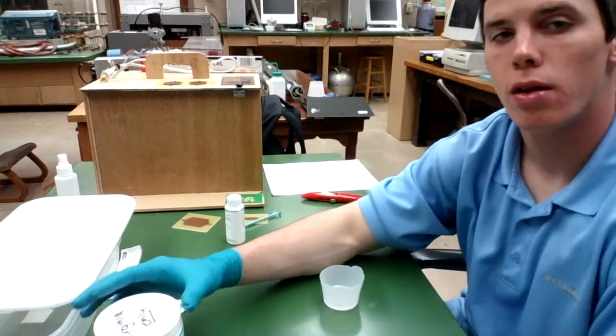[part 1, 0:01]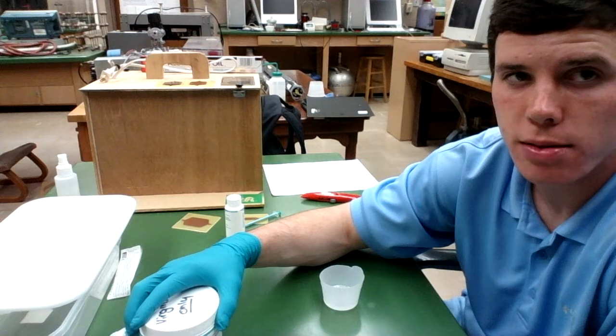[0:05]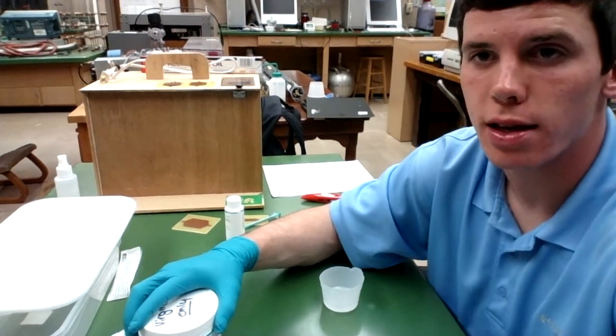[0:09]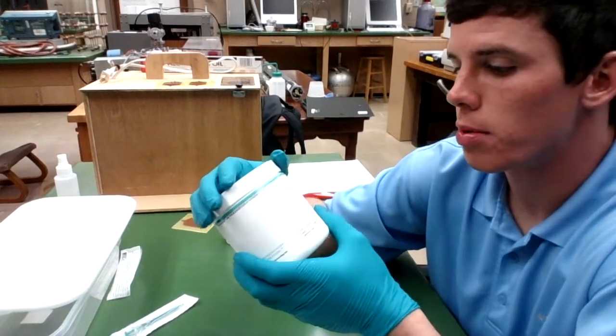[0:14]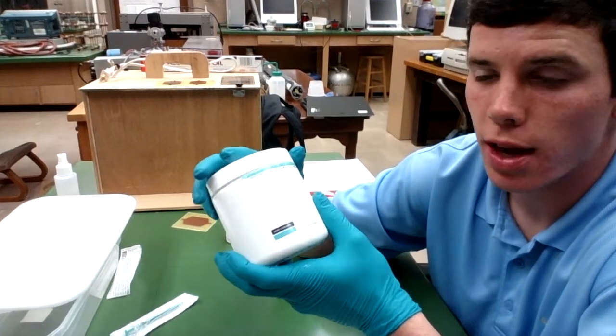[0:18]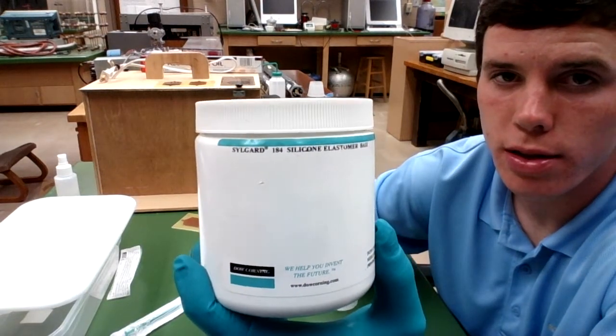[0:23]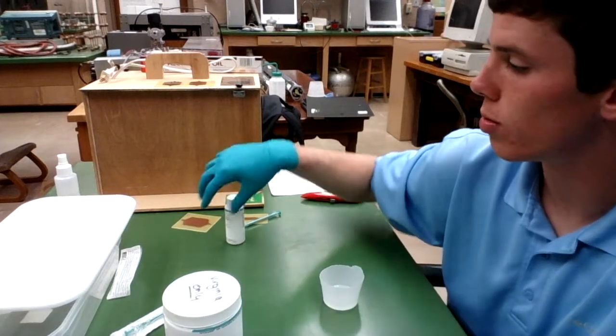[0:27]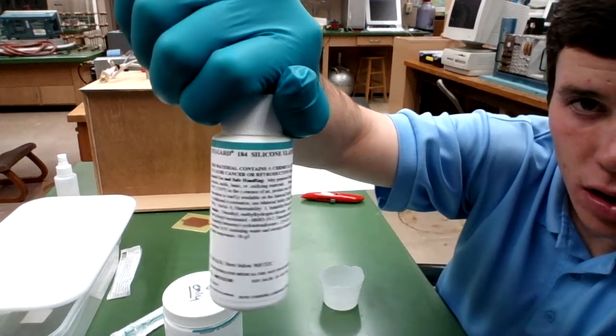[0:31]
So our next step is to make our PDMS mixture that will cure on our device and essentially make up our device. This mixture will be made at a 10-to-1 ratio of 10 parts of this Sylgard 184 silicone elastomer base from Dow Corning to one part of the Sylgard 184 curing agent.
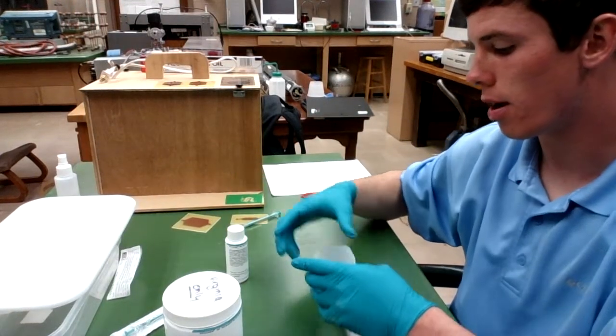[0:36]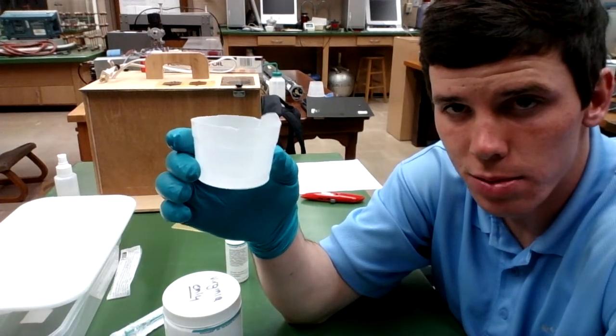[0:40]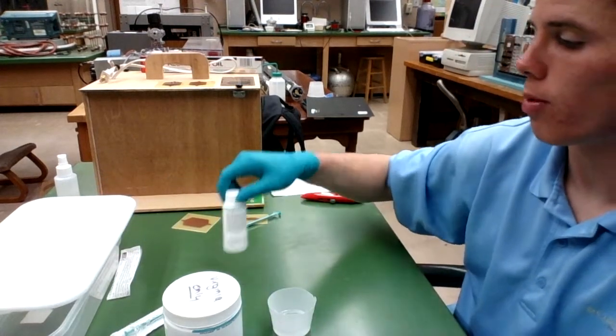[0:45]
I've already poured about 15 milliliters of the elastomer base into this cup here. I'm going to put in 1.5 milliliters of this curing agent.
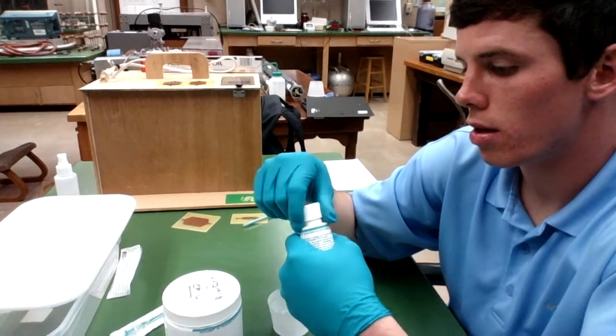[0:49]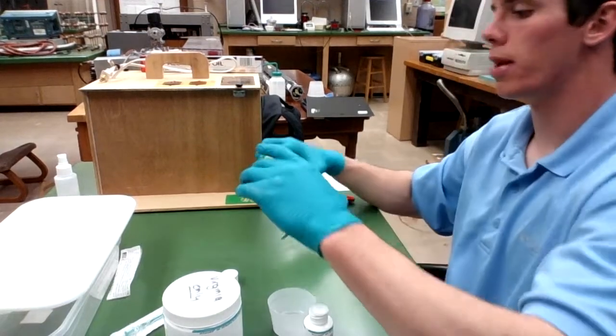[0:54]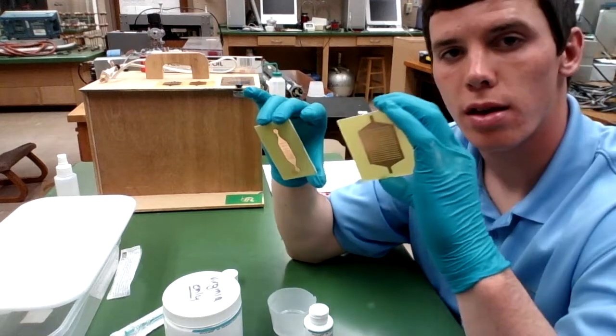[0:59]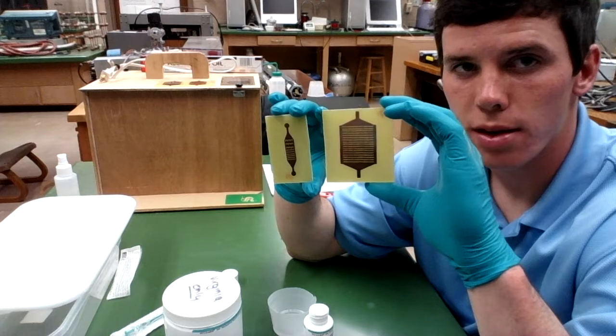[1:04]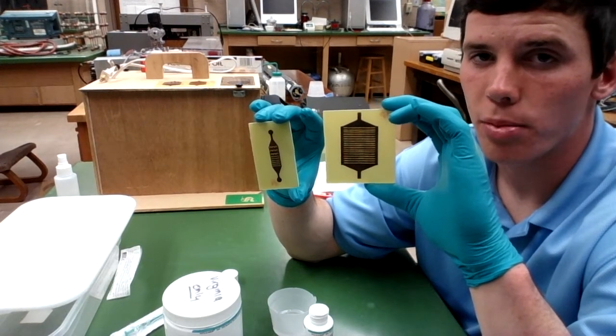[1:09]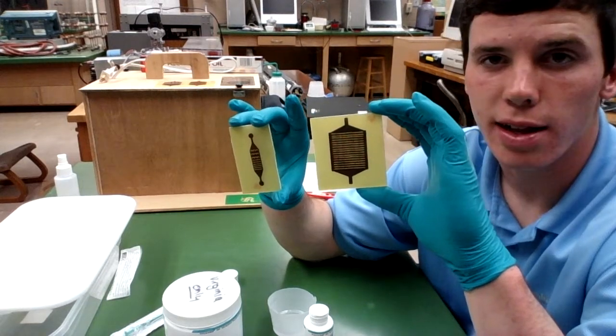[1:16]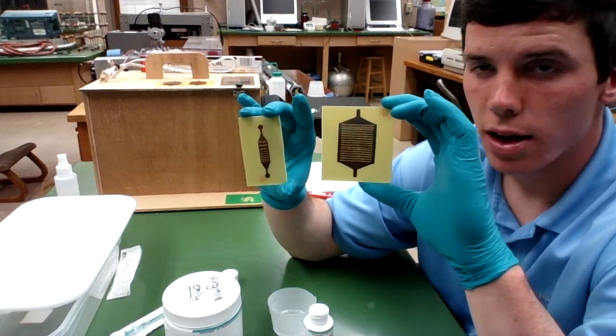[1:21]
Also, I have cut my printed circuit board into two pieces using my box cutter so that these pieces will more reflect the size of the device that I want, instead of having to pour all of this PDMS onto a large circuit board, a large PCB, and then wasting a lot of it. So I've trimmed down the designs a little bit in order to conserve my PDMS essentially.
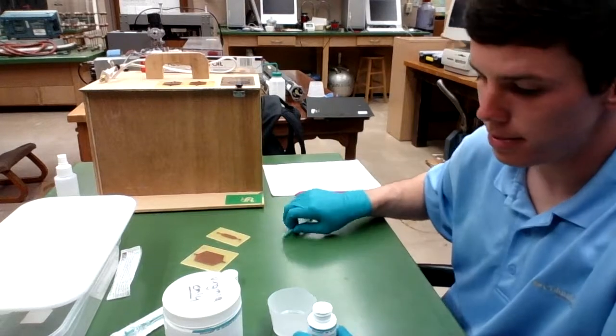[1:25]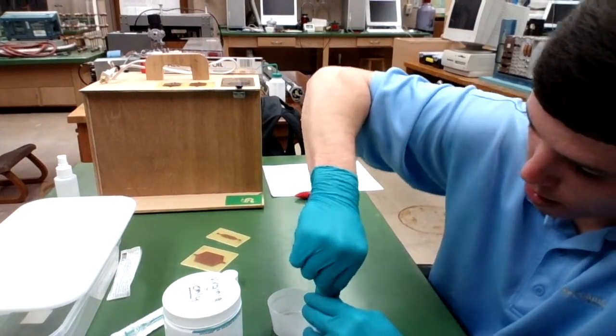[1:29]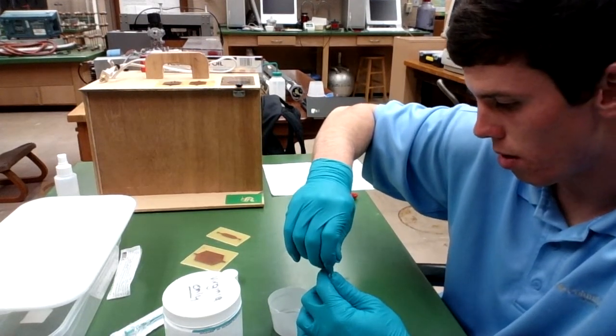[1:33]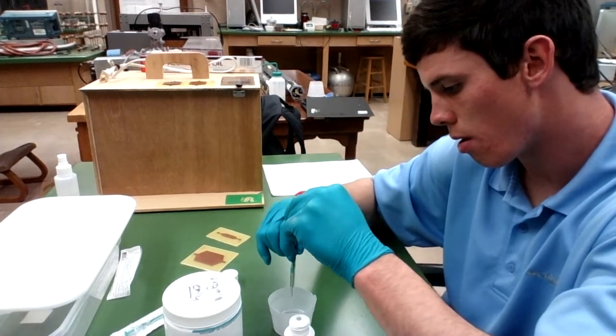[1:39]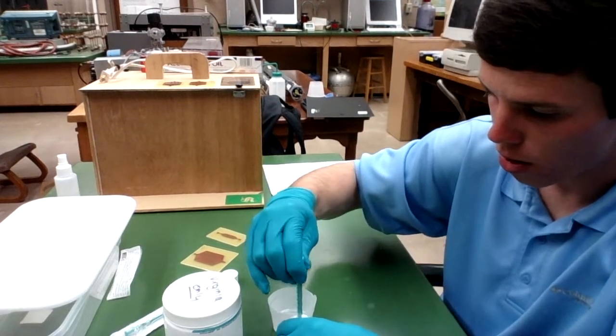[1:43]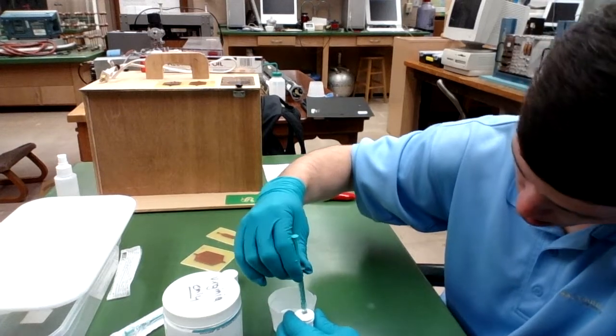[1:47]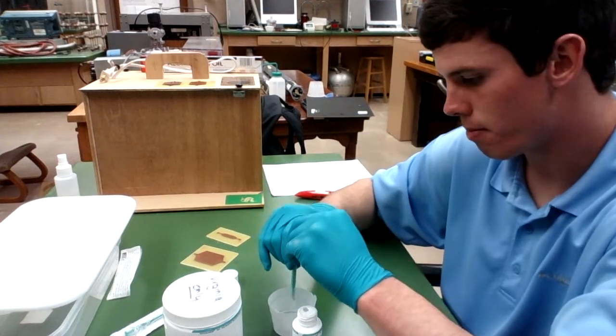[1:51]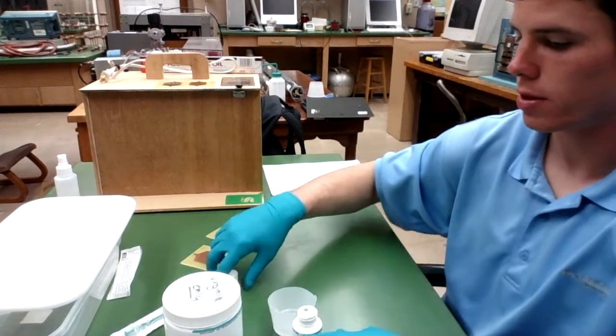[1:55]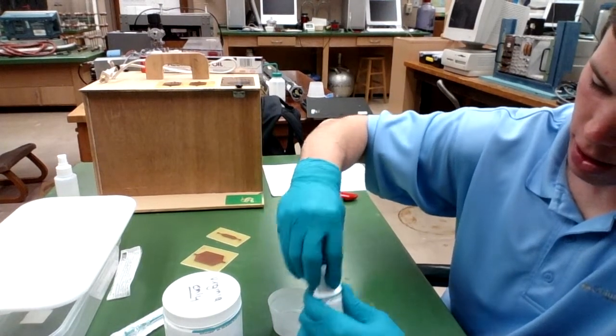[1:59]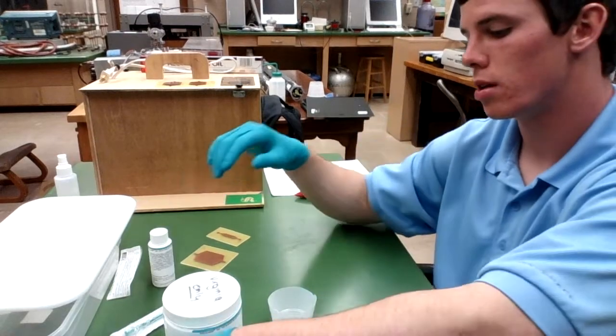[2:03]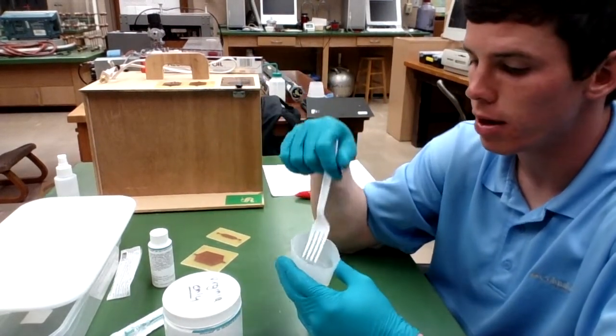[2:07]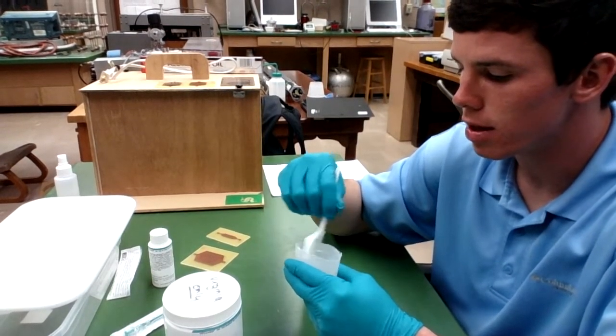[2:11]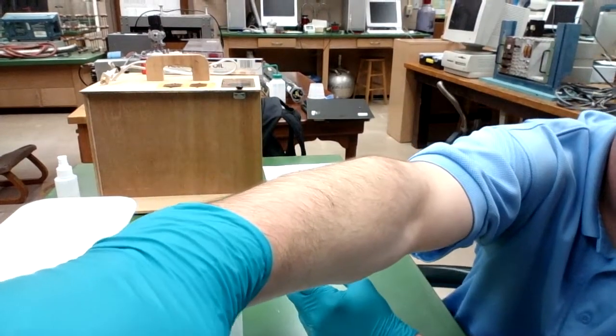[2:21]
Alright, so now that I've mixed the PDMS at a 10-to-1 ratio, my job now is to stir the mixture for about 5 minutes just using this plastic fork here. You want to stir it up so that you get lots of bubbles, ensuring that the curing agent has been mixed very thoroughly throughout the elastomer base.
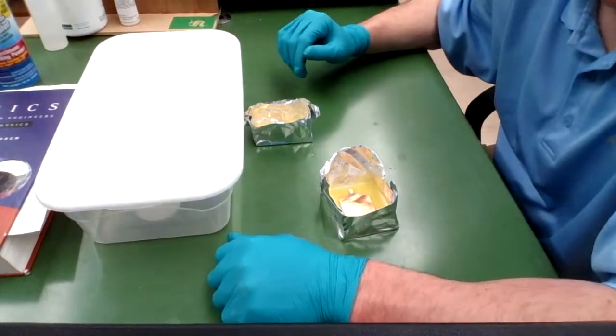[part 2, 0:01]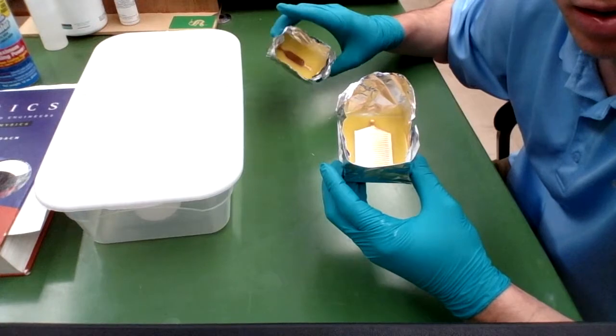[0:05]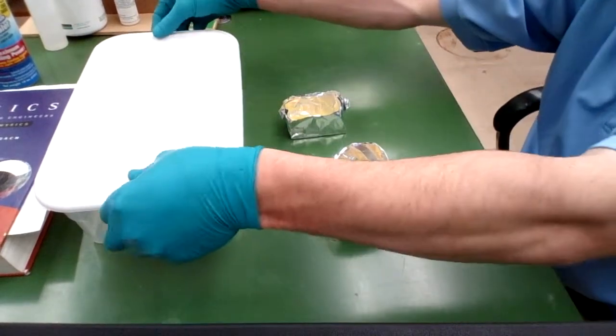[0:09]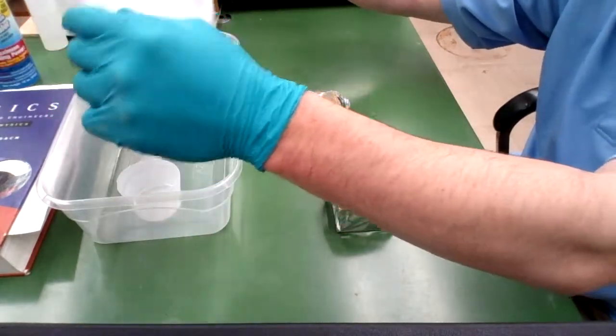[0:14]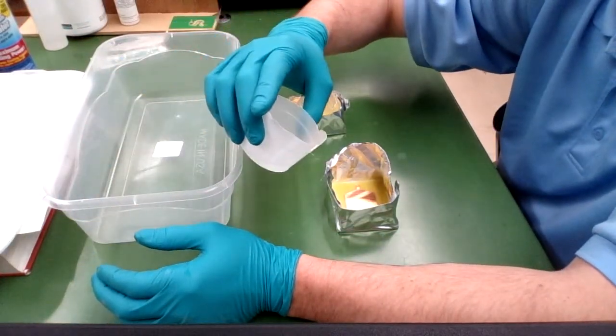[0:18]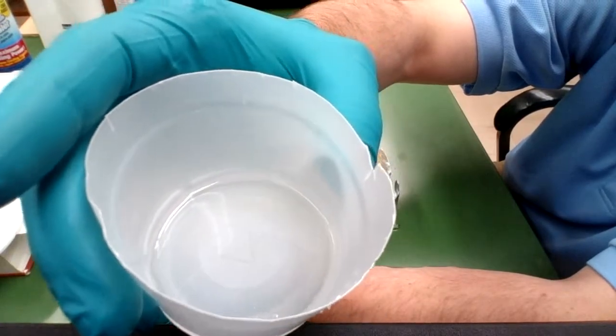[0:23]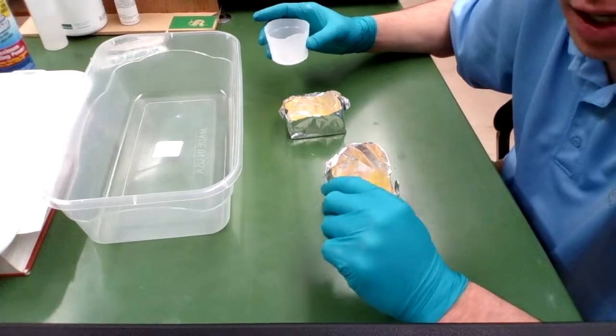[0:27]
Alright, so I've created two little vessels for both of my printed circuit board designs, and it's been 15 minutes for my PDMS to degas, so let's check it out. You can see PDMS has been completely degassed, and there are no air bubbles in there. I'd like to credit this ingenious little step in this process to Ron Reiser of the Science Geyser.
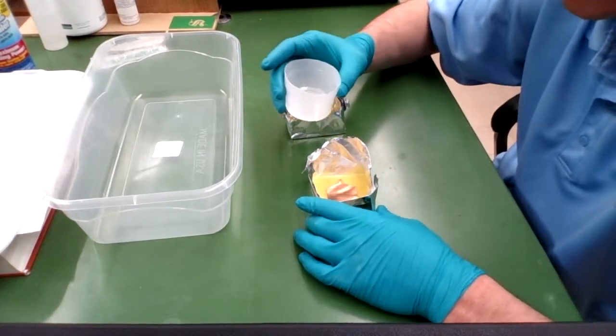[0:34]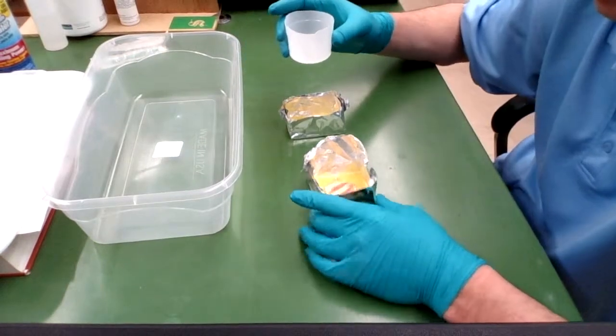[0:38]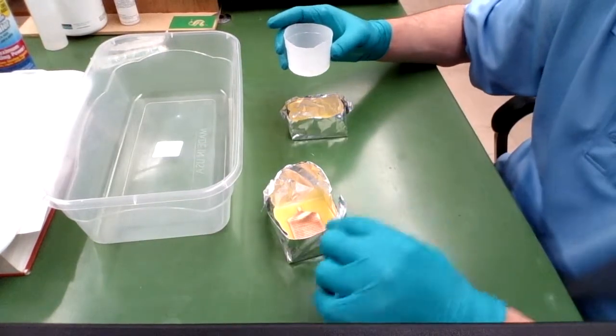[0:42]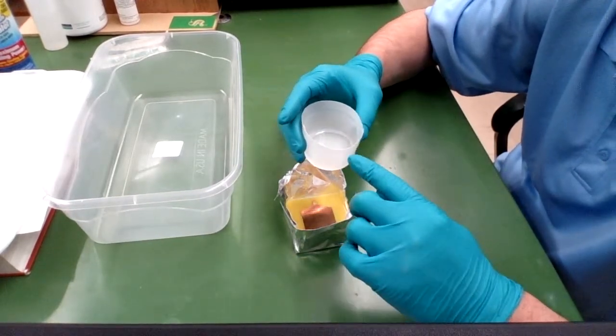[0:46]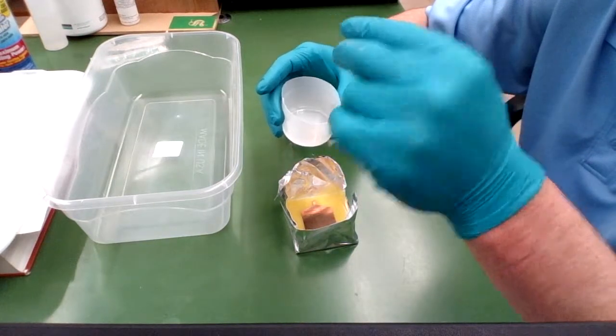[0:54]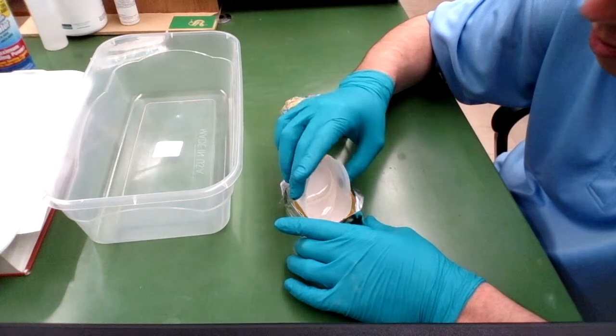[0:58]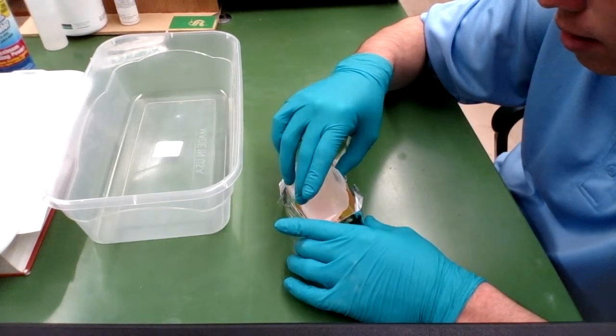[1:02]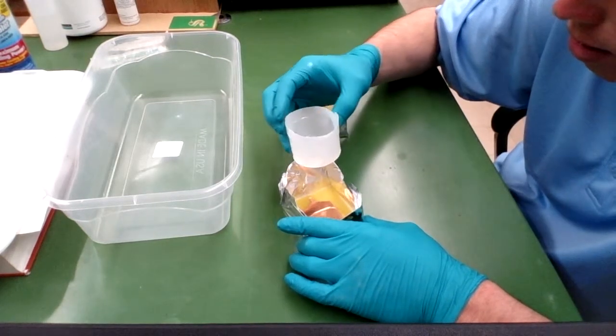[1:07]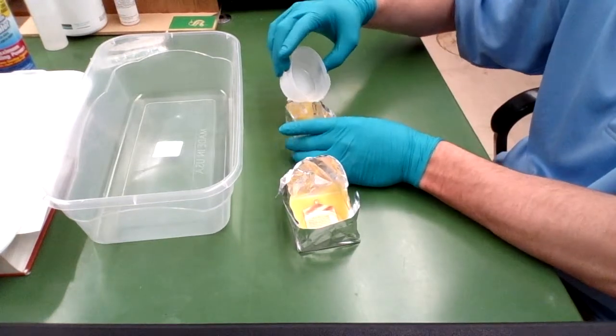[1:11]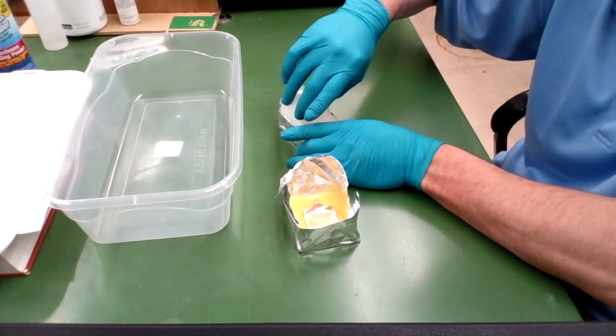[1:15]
Alright, so next, I'm going to pour my PDMS onto my designs. Since this design is slightly larger than this guy here, I'm going to pour a little bit more onto the larger design. And when I'm pouring, I want the tip of the cup to be as close to the PCB as possible in order to prevent air bubbles forming as the PDMS drips onto the PCB. So the rim of my cup is actually touching my PCB at the moment.
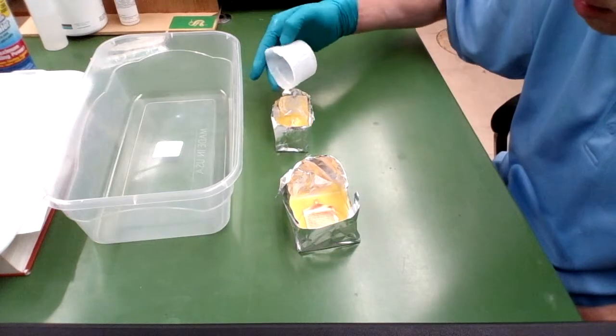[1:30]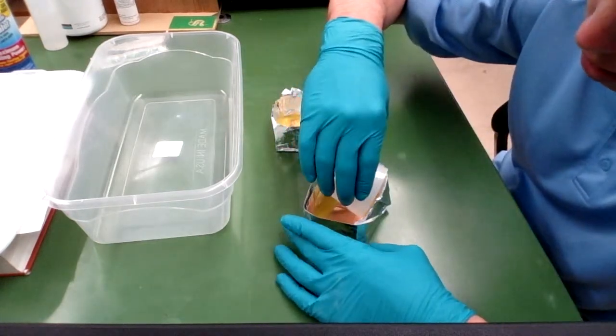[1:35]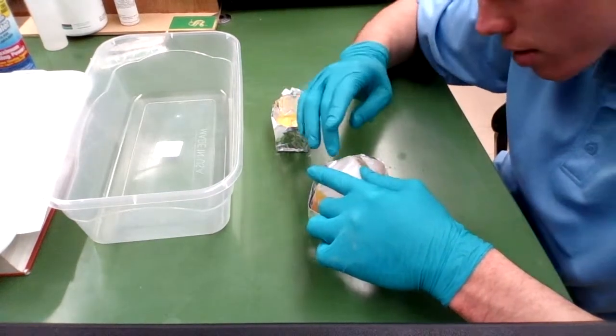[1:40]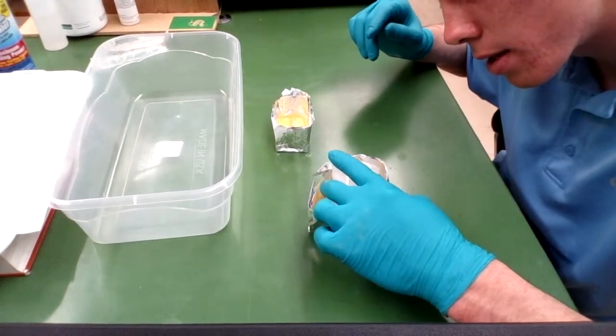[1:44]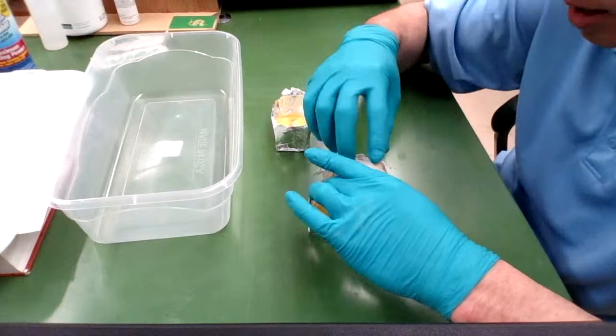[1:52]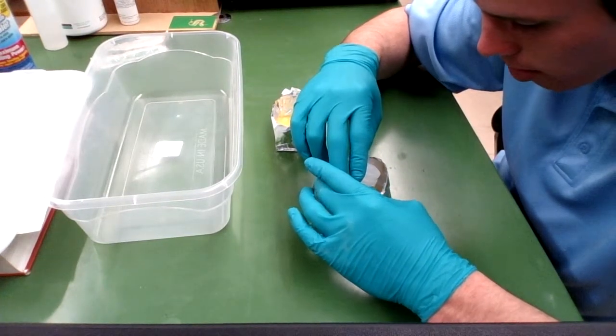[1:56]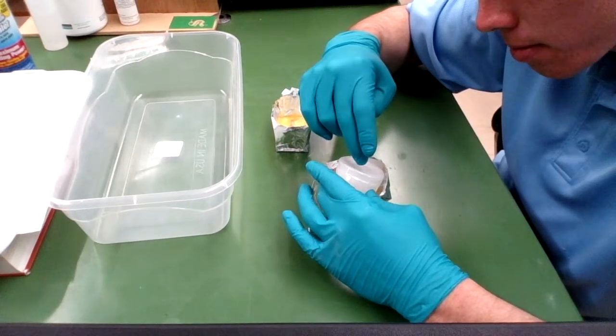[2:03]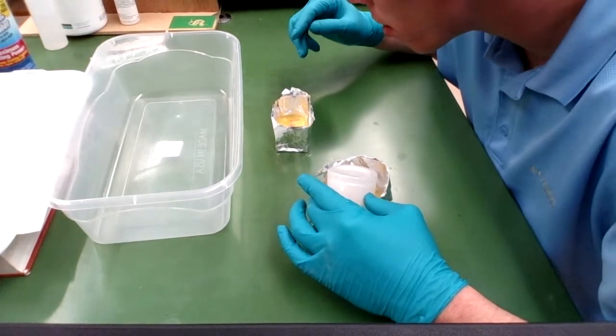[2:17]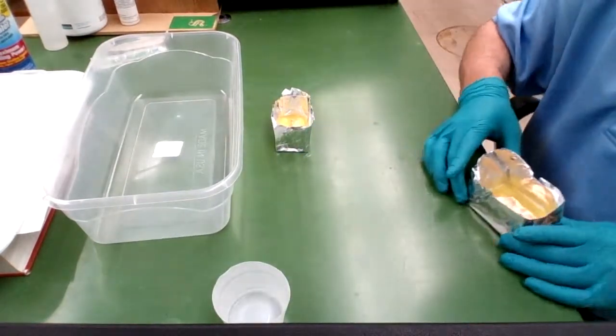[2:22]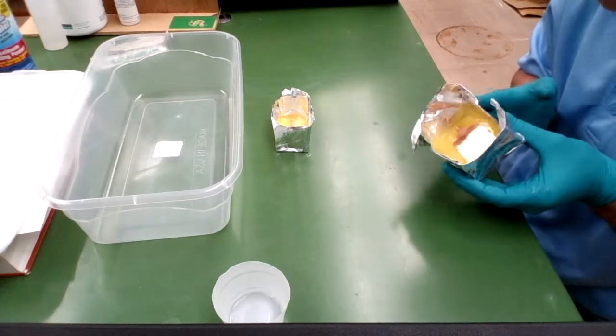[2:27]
And you don't need to pour so much that it completely covers the design, because as it sits in the oven, the PDMS will spread out all over the design. You want to use every last drip of your PDMS, though, because this stuff is kind of expensive. Definitely make sure you cover your entire design, but don't worry about covering your entire printed circuit board. We can spread it around a little bit by tilting it.
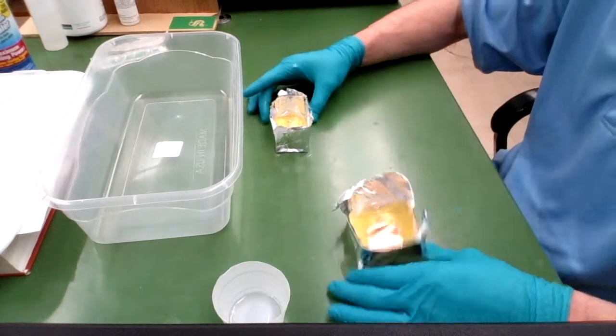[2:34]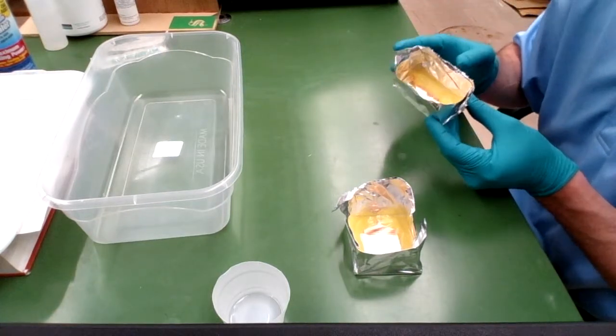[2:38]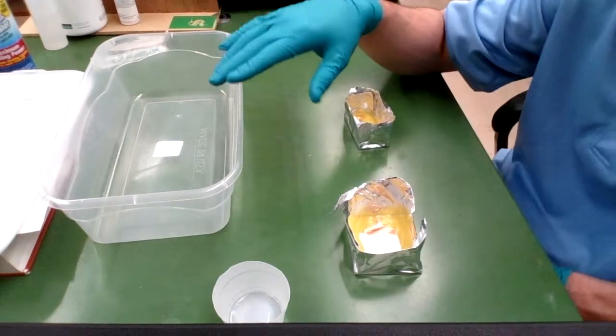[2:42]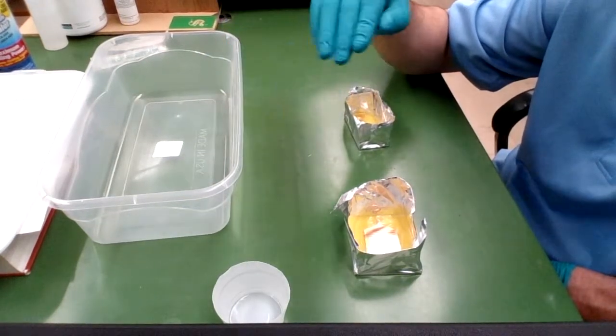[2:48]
Another important thing is to make sure that the surface of your PCB is completely devoid of any impurities or any crud that could be on the surface. And if there is, just wipe that off. Make sure it's not there.
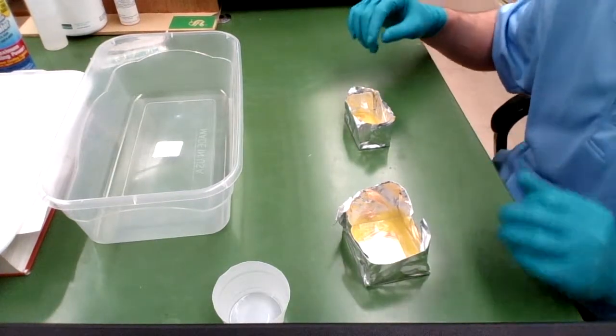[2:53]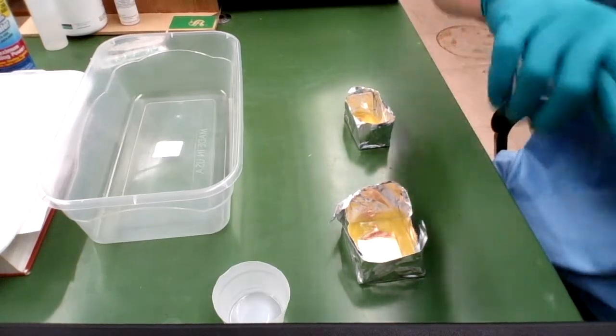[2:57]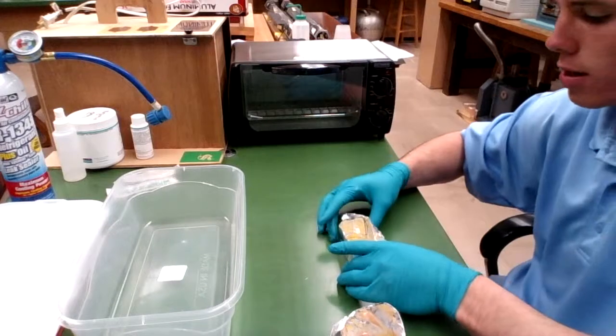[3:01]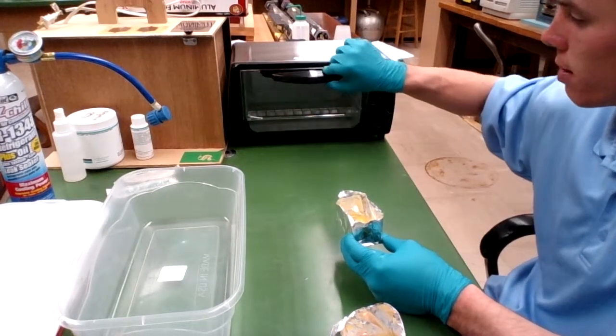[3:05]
So I've poured my PDMS onto my two designs. I have my oven here preheated to 120 degrees Celsius approximately, or 250 degrees Fahrenheit. And so I'm going to throw in my PCB for 10 minutes.
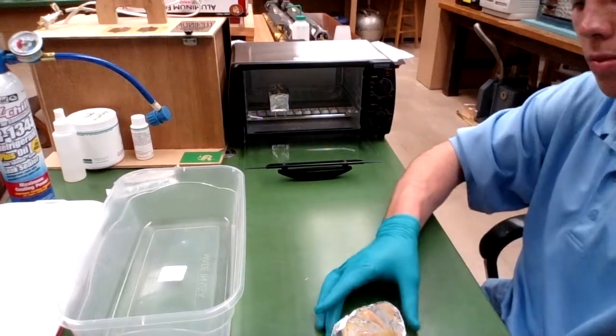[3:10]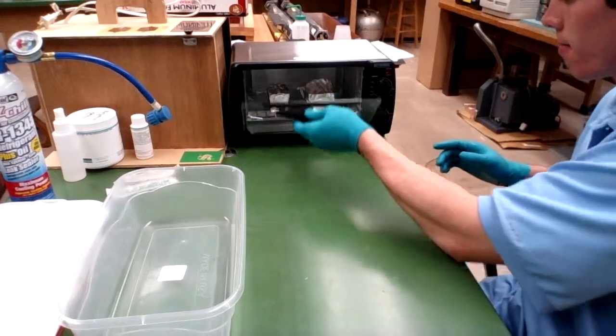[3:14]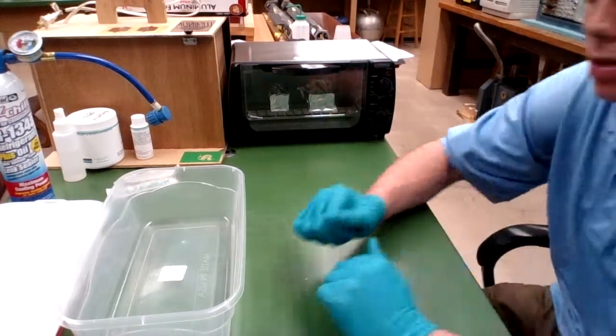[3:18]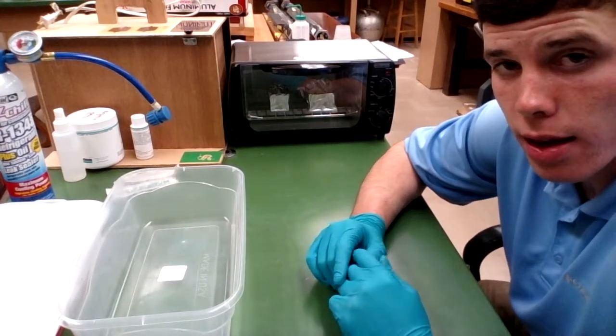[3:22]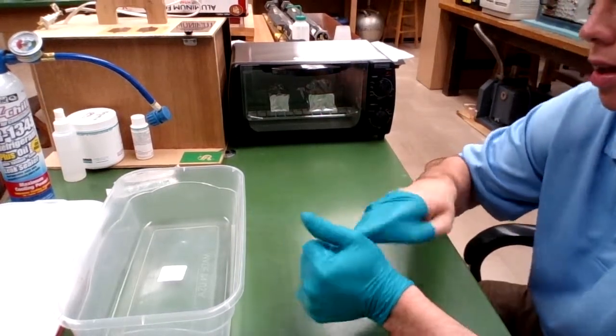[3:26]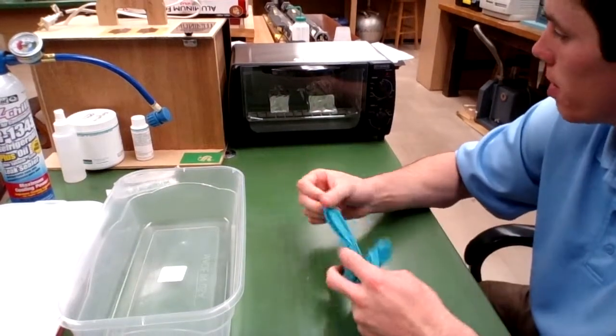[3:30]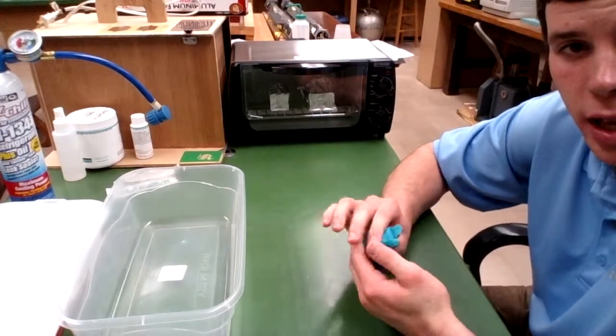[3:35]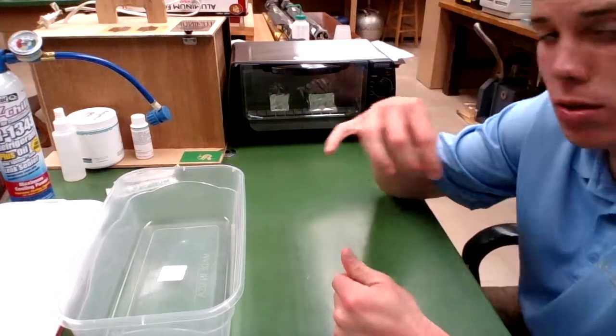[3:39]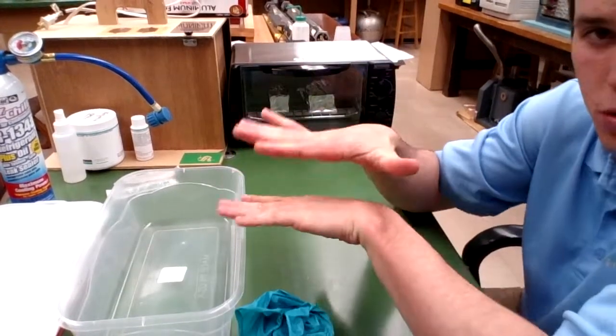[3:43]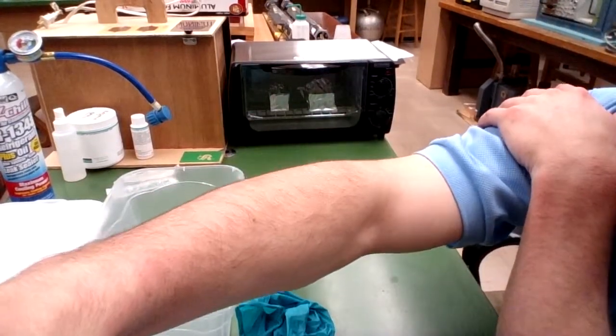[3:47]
Now, there have been occurrences where some bubbles have reformed while in the oven, but those have only happened very rarely, and so after 10 minutes we'll pull our PCBs out of there, and our PDMS should be completely cured and completely clear as well, which will allow for us to cut it off of the printed circuit board and adhere it to a microscope slide.
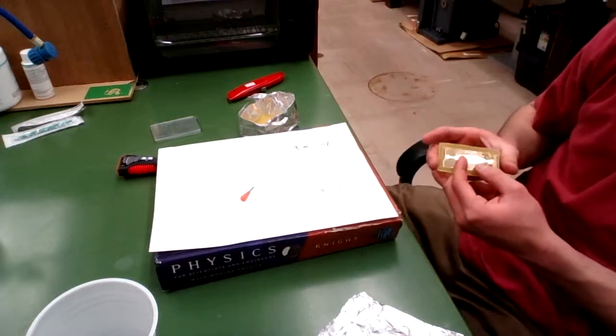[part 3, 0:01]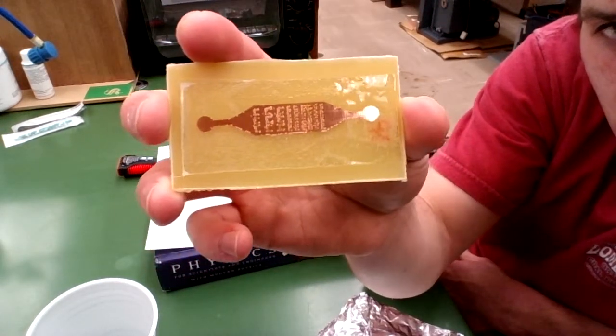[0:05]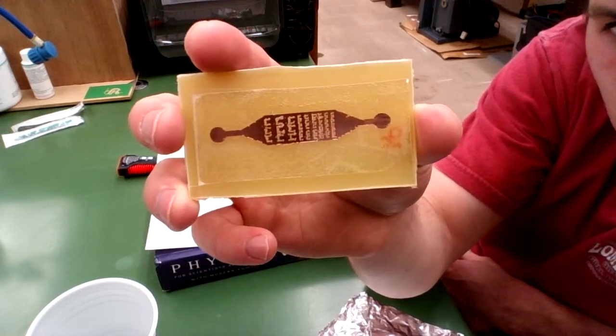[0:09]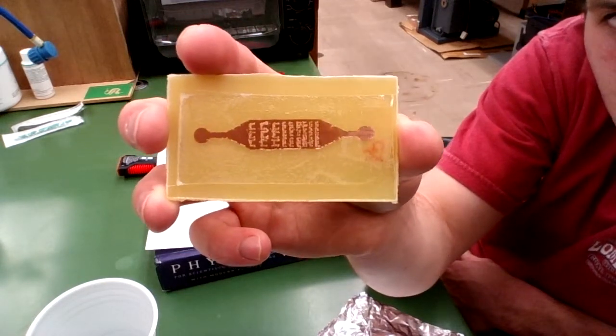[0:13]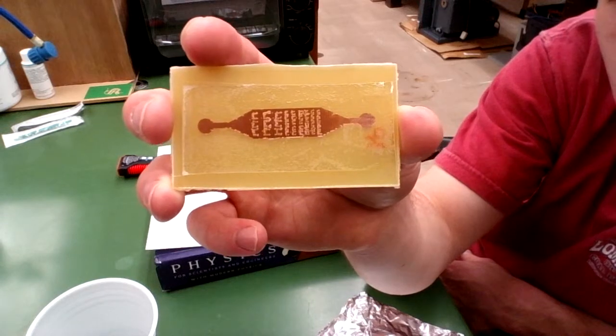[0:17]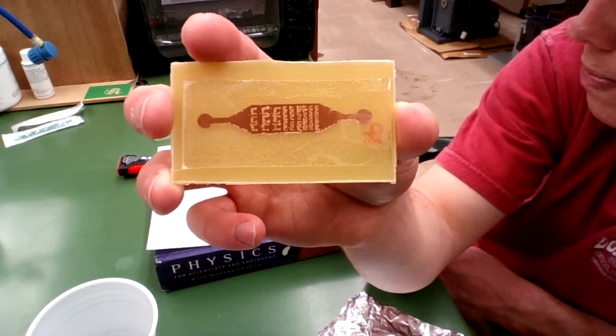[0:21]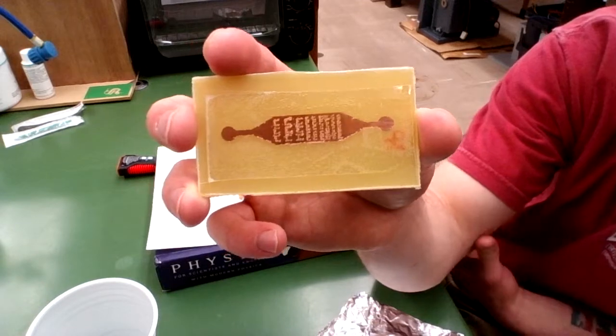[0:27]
All right, so here I have one of my cured devices. As you can see, this one didn't work very well because during the curing process, a lot of bubbles showed up in the PDMS. But regardless, I'm going to use this device here in order to show you the inlet and outlet punching processes and the simplest way to adhere your device to a microscope slide, which is using super glue.
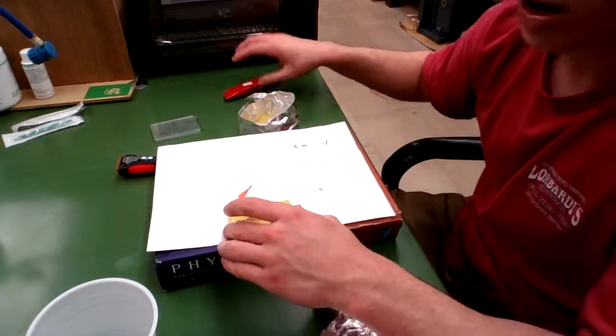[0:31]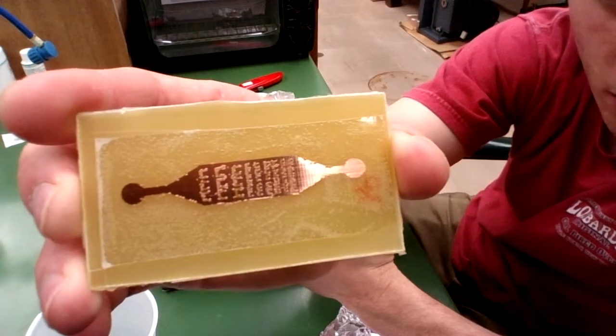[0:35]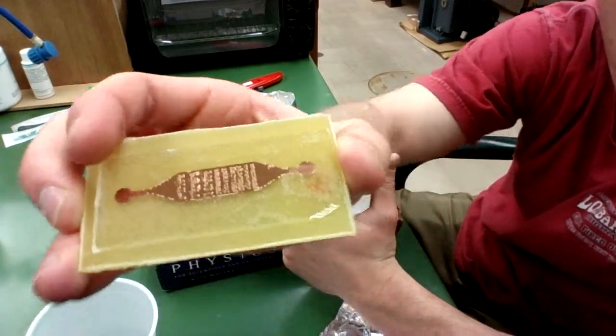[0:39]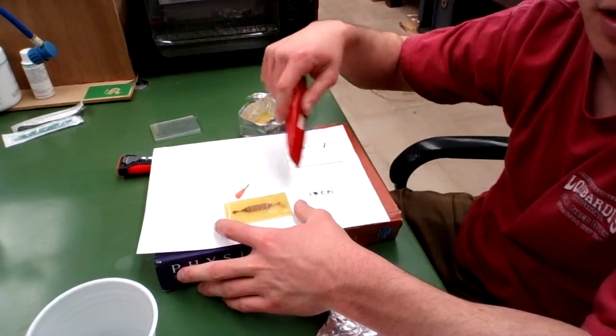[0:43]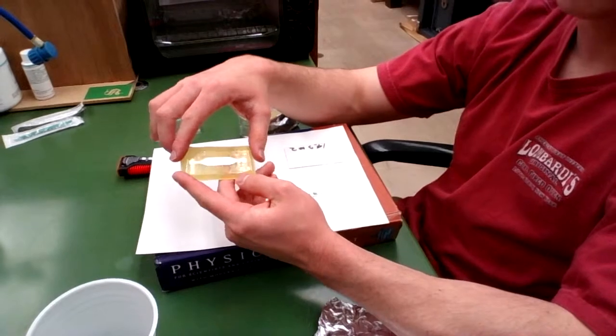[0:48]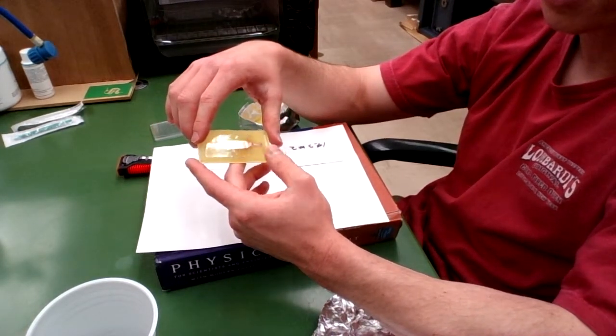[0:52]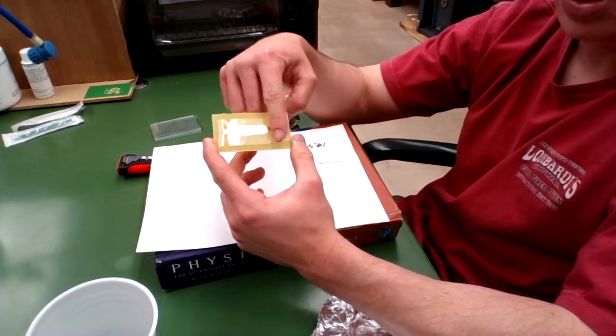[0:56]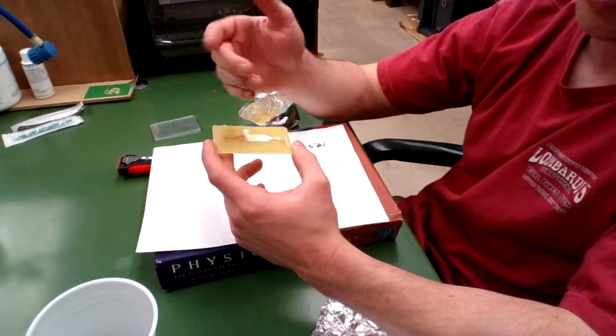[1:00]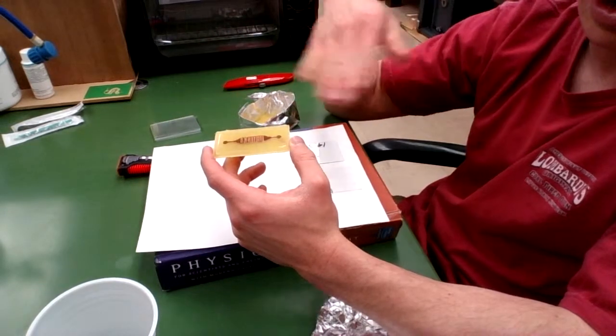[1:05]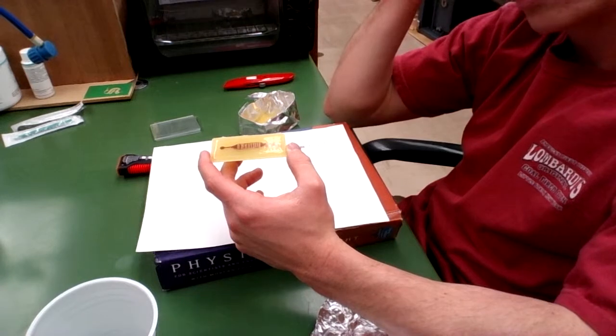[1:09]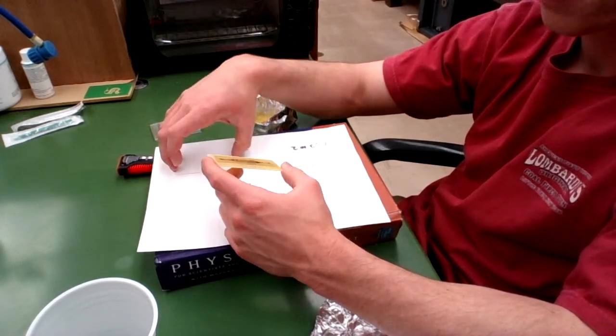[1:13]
All right, so first, I've cut out my design, cut off the edges using my box cutter so that I have clean edges around my device. So all I did was take off the sides of it, essentially. And now what I'm going to do is carefully peel it up, making sure not to tear the device as it's pretty thin, and also making sure only to touch the side that is currently exposed to the air, because we want the side in touch with the PCB to remain completely free of impurities in order to ensure the best bonding to our microscope slide here.
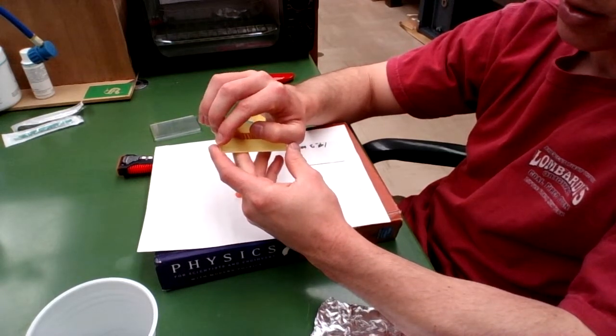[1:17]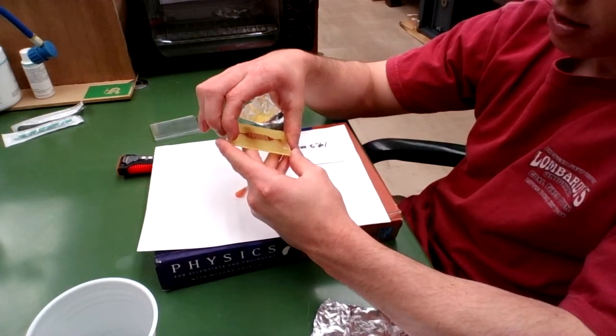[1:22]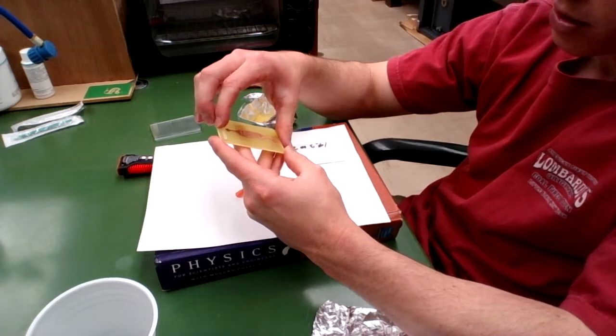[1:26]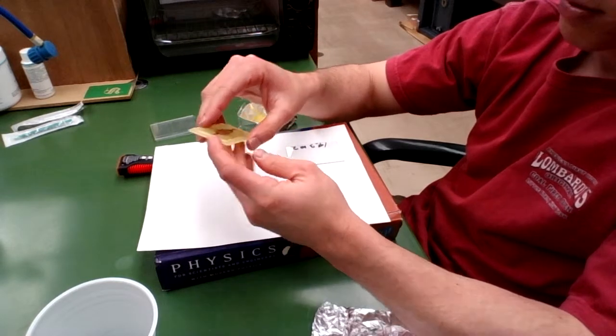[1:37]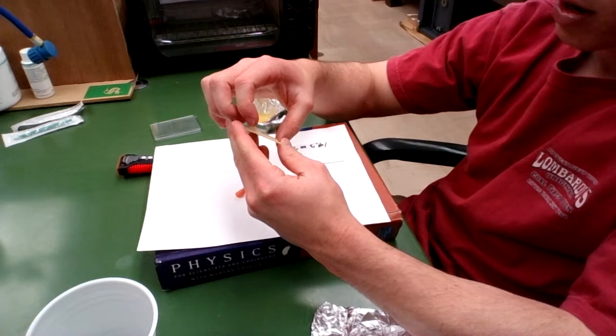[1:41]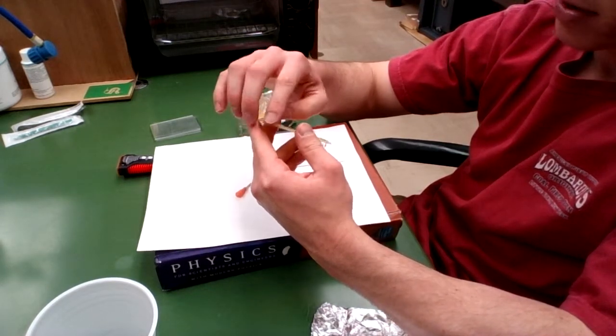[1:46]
All right, so now I'm going to peel my printed circuit board up, or my device up. Sometimes it's useful to use your box cutter or razor in order to help get this process started, but at a certain point, you should be able to just peel it off pretty nicely. If you've made the layer too thin, sometimes it will rip, which can be extremely frustrating because you have to start all the way over, so just be very gentle with it.
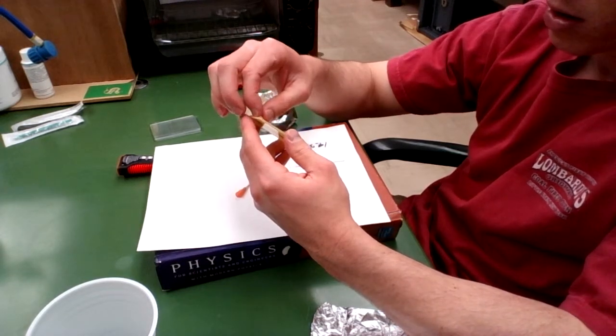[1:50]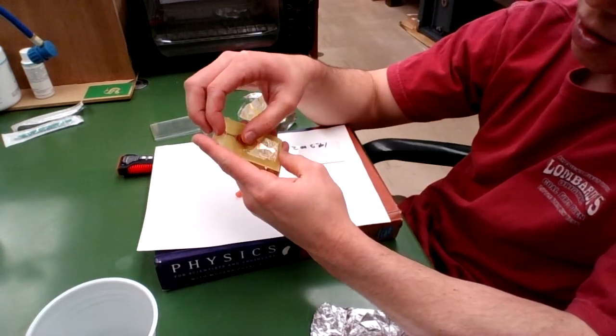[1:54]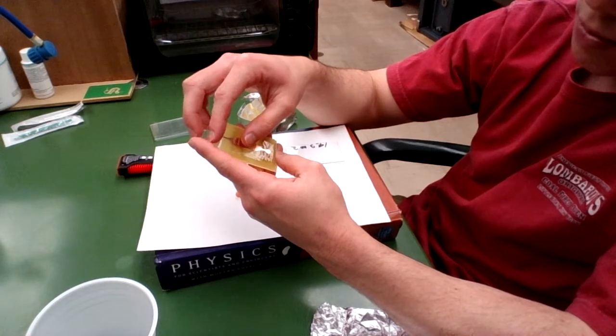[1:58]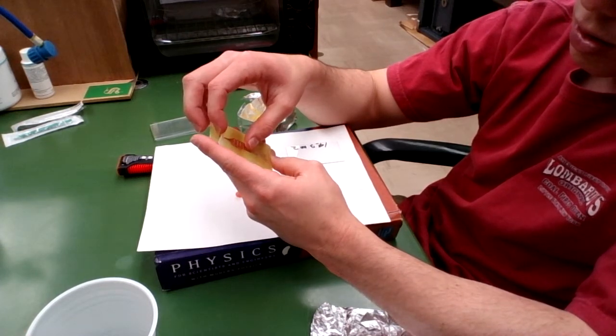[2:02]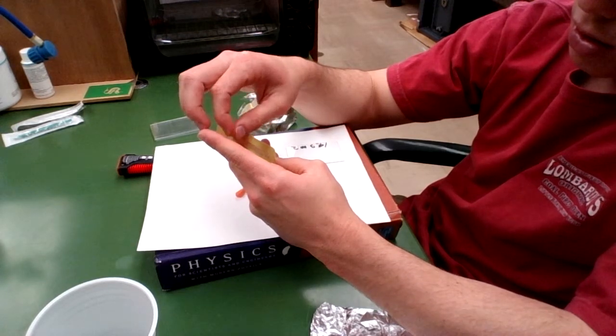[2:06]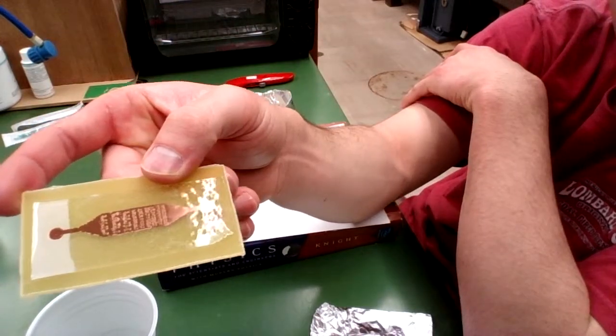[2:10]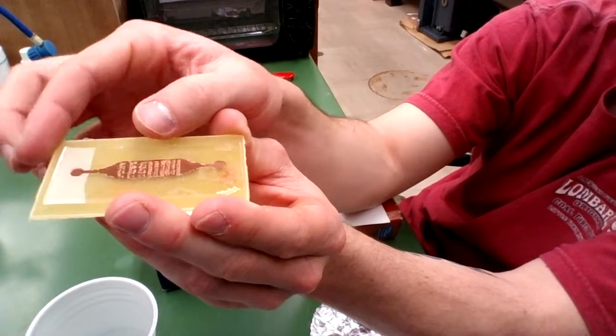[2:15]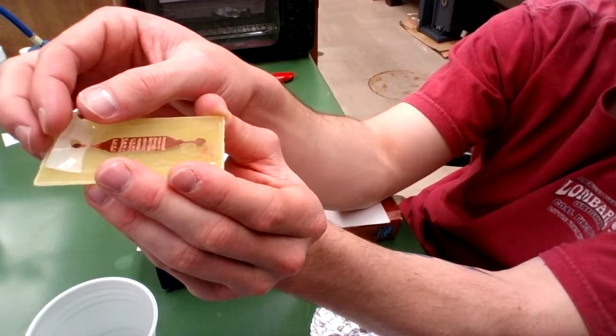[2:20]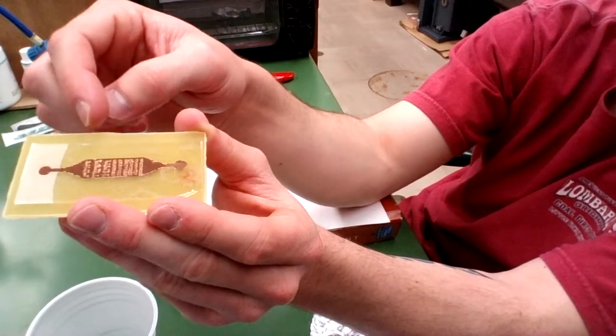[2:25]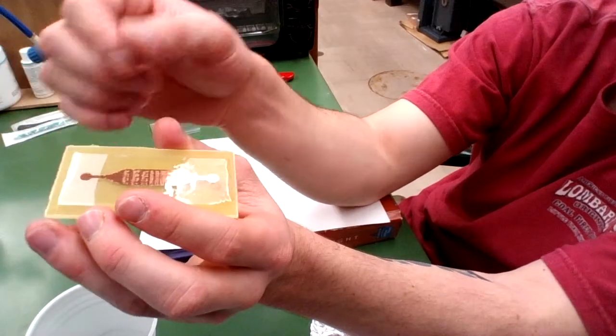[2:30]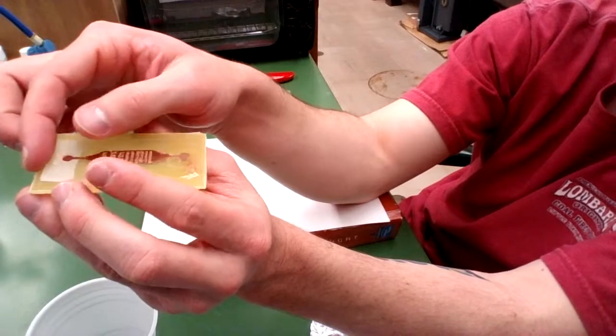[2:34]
You can see this frostiness appearing from the parts that have been pulled up off of the PCB. This is so frosty at the beginning because the first time a printed circuit board, one of these guys, is used for this process, it imparts this frosty layer onto the PDMS. I'm not exactly sure what it is, but if you are to reuse this PCB, this won't happen as dramatically.
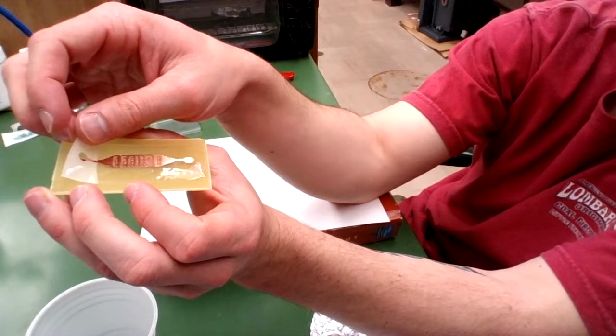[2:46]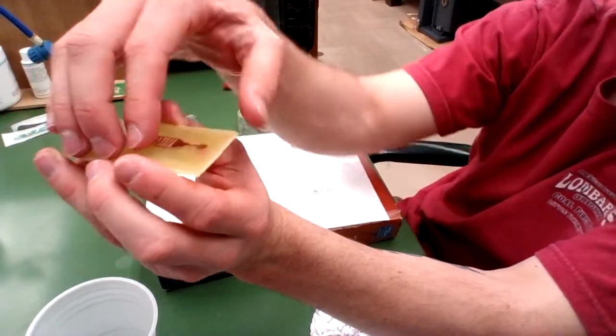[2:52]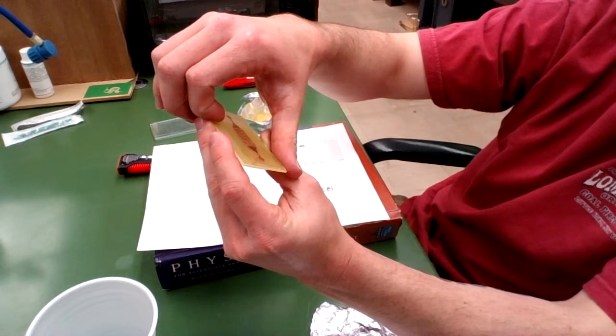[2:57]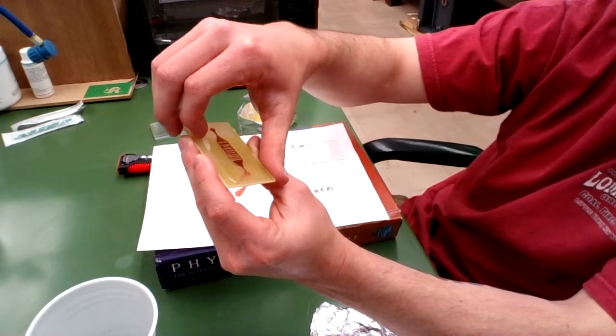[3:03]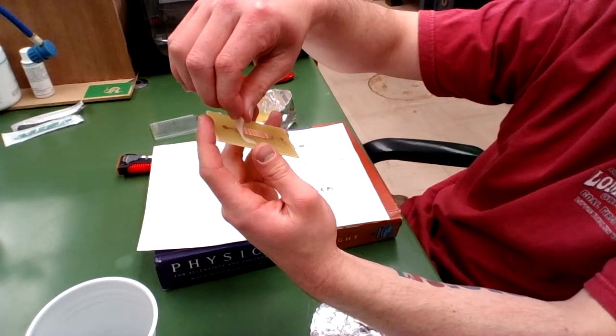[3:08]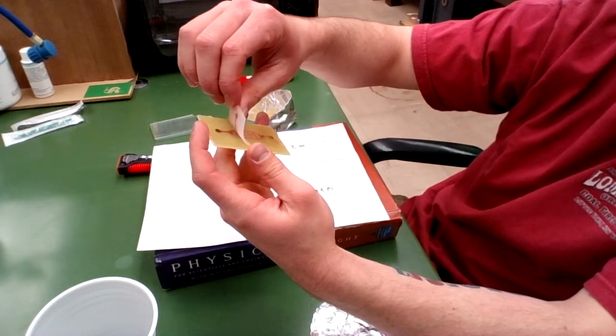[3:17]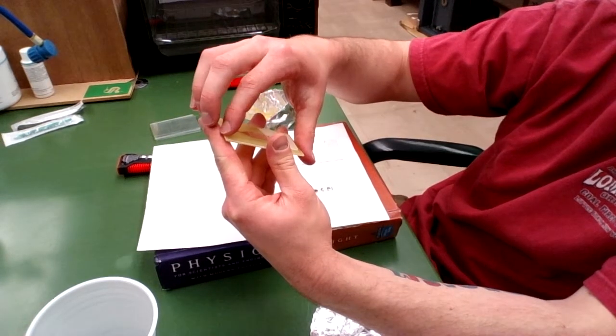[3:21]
So making sure only to touch the sides of the device and not touch the bottom of the device, the part that will be in contact with our microscope slide. All right, so now I'm going to attack it from the other end.
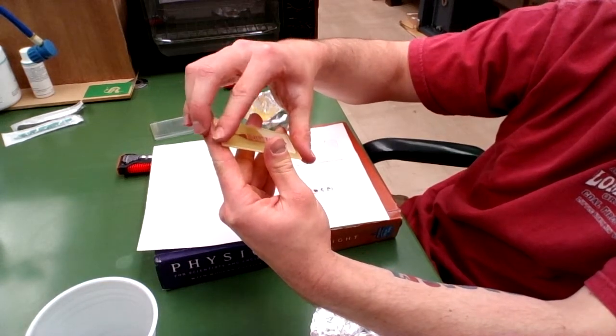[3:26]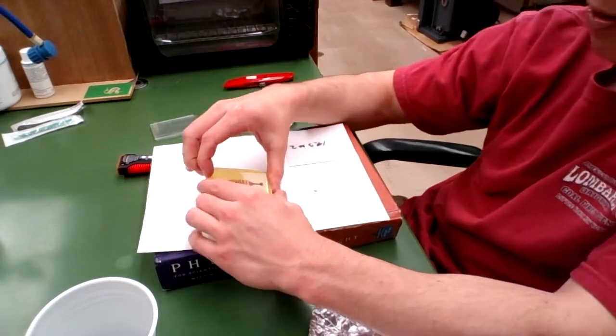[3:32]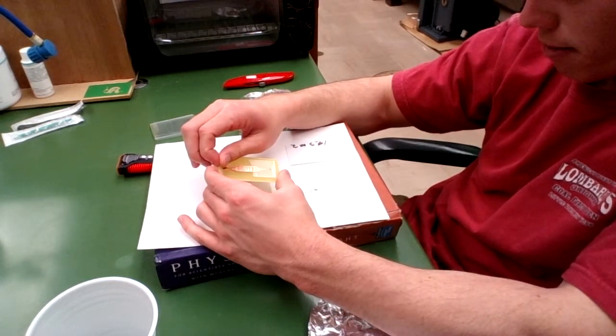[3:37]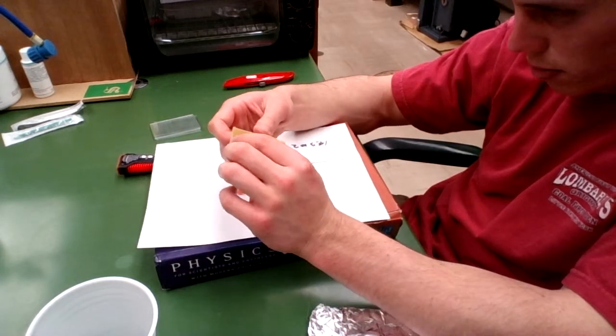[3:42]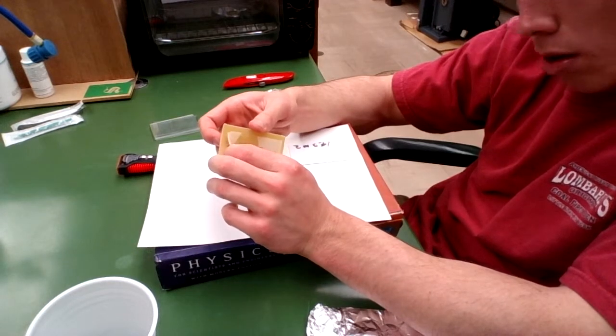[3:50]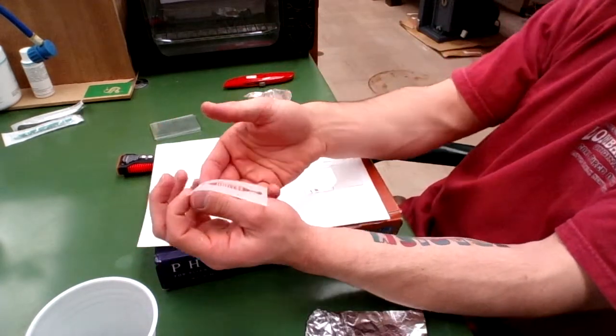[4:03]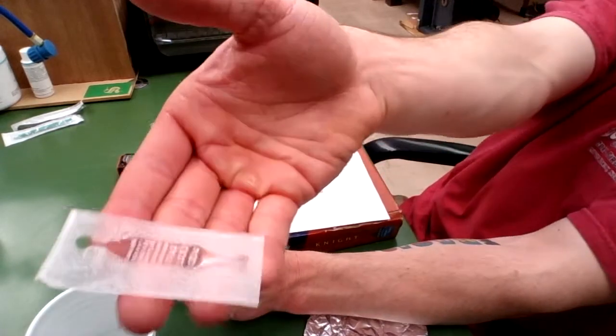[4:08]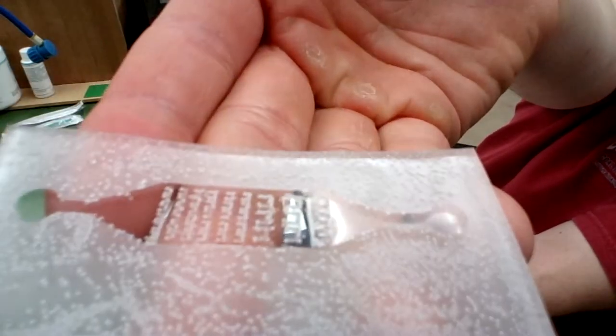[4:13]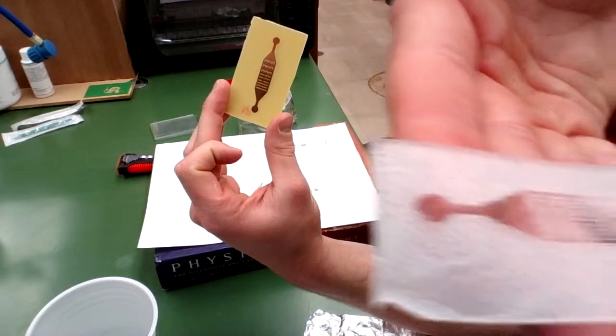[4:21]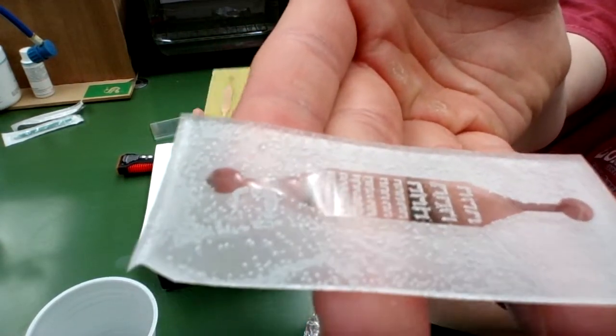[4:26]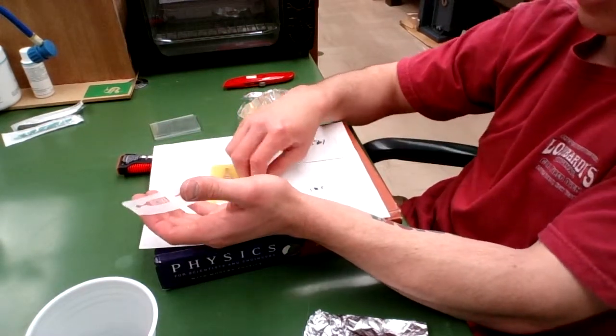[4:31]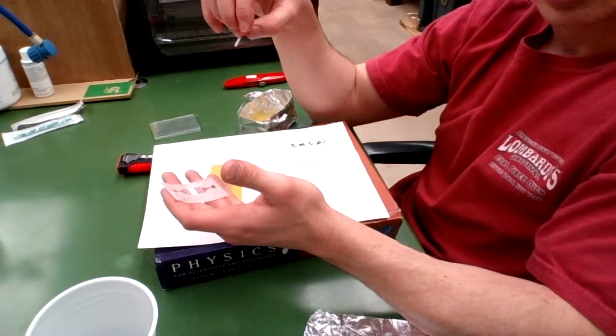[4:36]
All right, so here is my design. There is the bottom side up so that you can see it. I don't know if you guys can tell, but the clear layer, which corresponds to our copper layer here, is slightly indented in the PDMS, so this will be our channel through which our experiment will run. And so at this point, we need to punch inlet and outlet holes on our design.
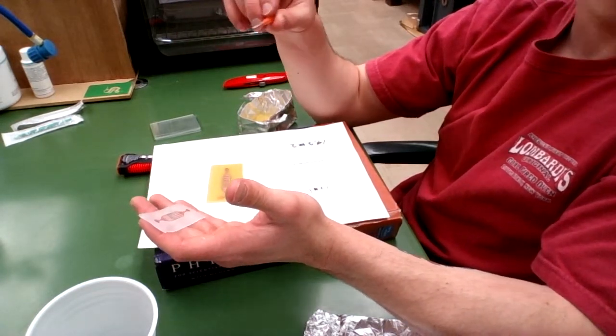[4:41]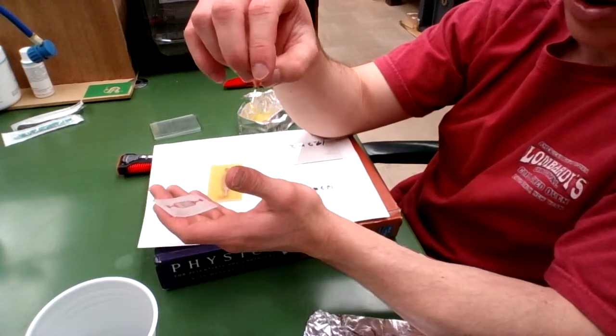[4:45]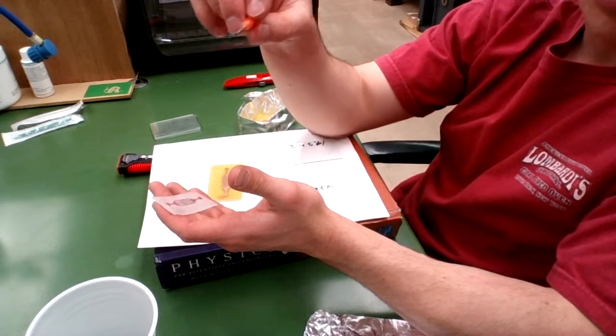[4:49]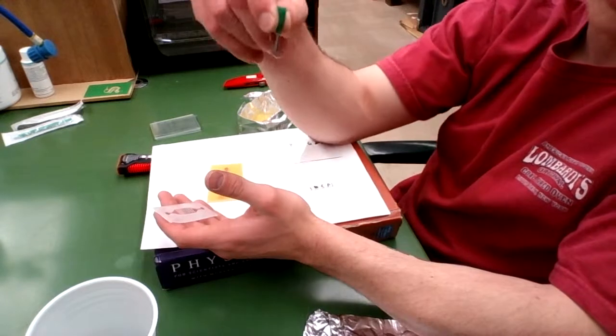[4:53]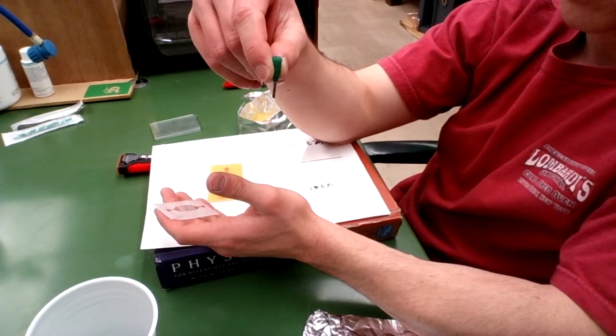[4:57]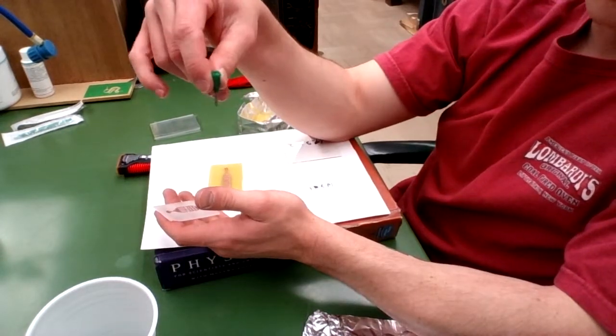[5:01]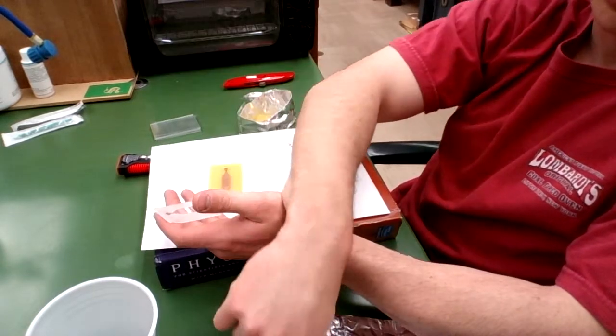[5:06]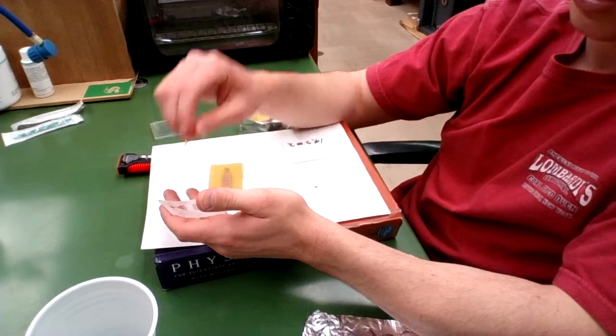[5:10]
So the way we're going to do that is using a luer. And the best way to do this is to use a luer that is one size smaller than the luer that you will use to inject your fluids into the device, because if the hole is slightly smaller than the luer you'll be using in the experiment, it'll provide a very tight fit and it won't leak.
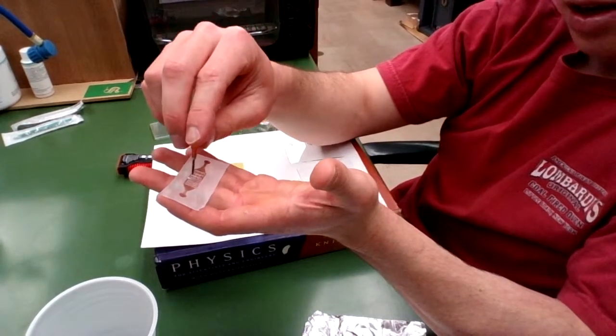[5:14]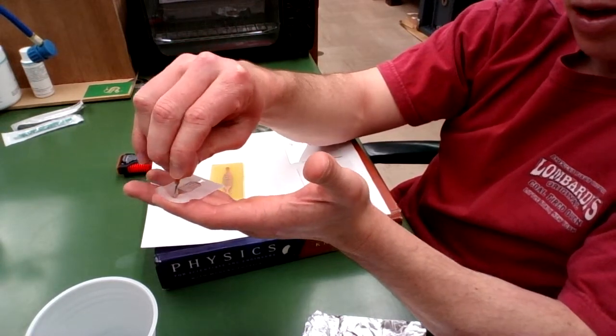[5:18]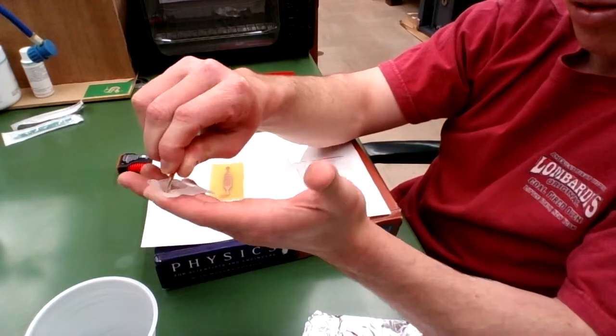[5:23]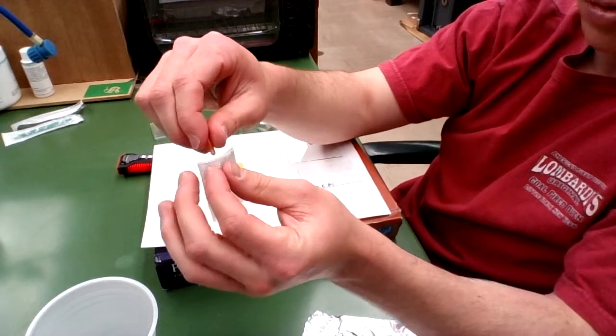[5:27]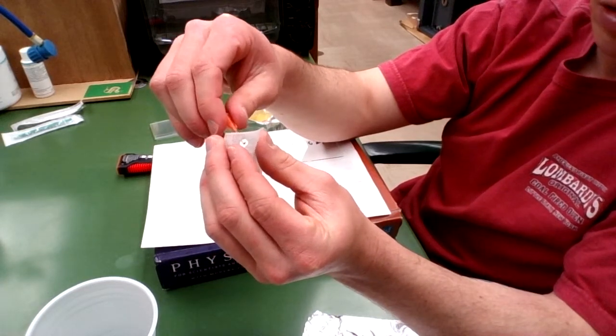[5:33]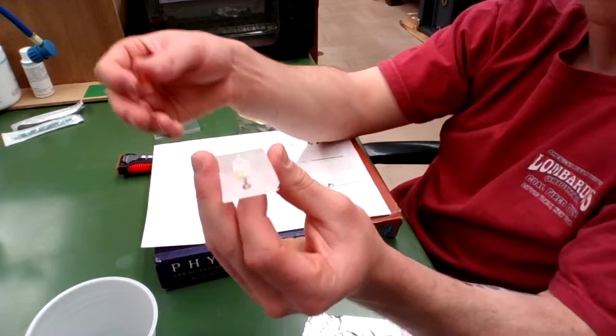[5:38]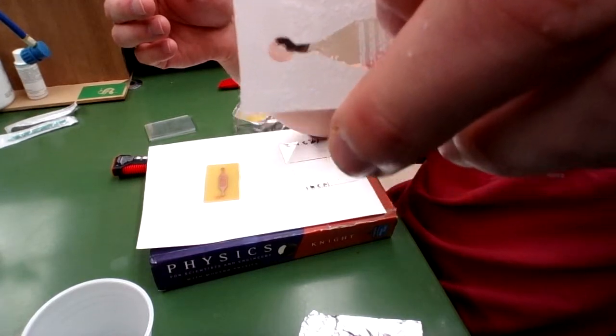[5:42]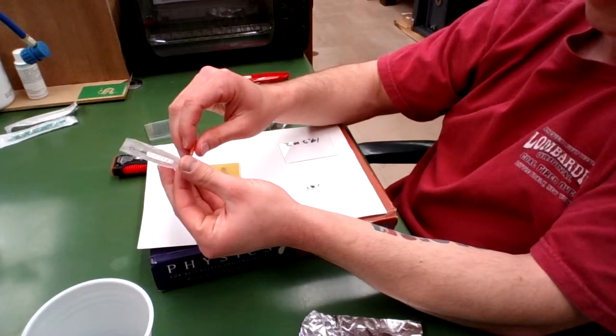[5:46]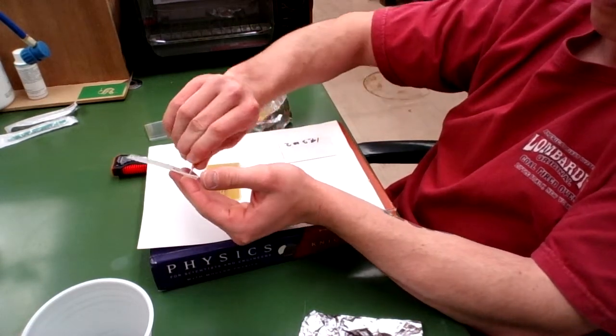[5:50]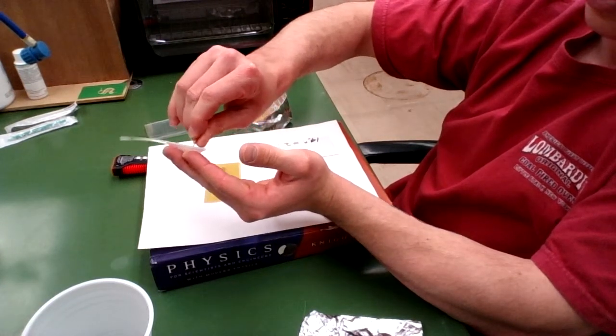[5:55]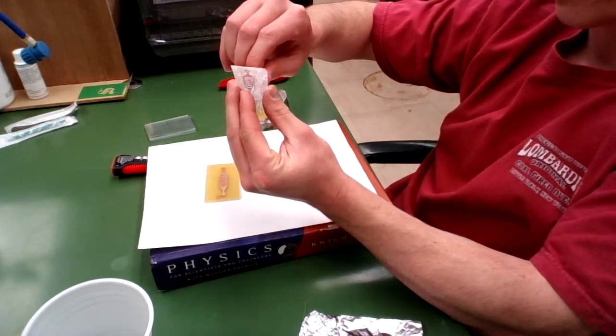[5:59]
So I'm going to punch this into the inlet here, making sure, once again, to only have the tip of the luer touch the bottom of the device, and definitely not my fingers whatsoever. There we have one hole. All right, now I'm going to punch the outlet. You're going to be as gentle as you can in this process as well, because the PDMS is pretty susceptible to tearing under this kind of stress.
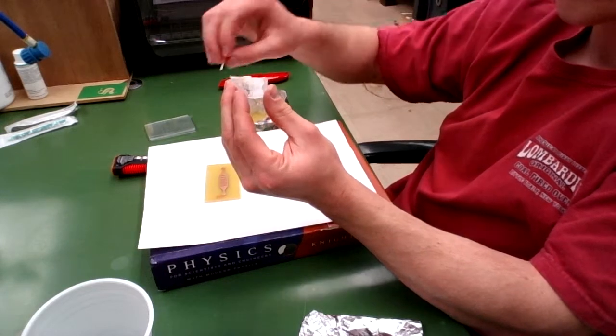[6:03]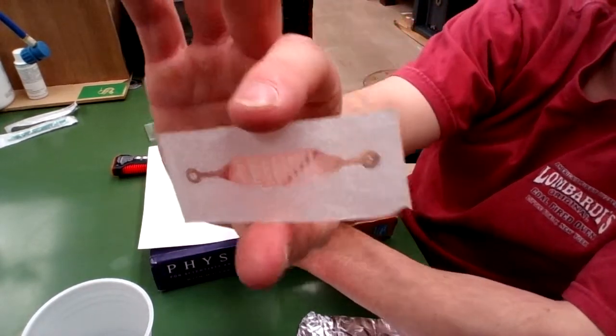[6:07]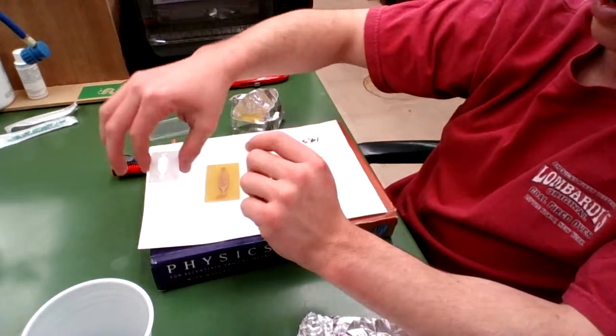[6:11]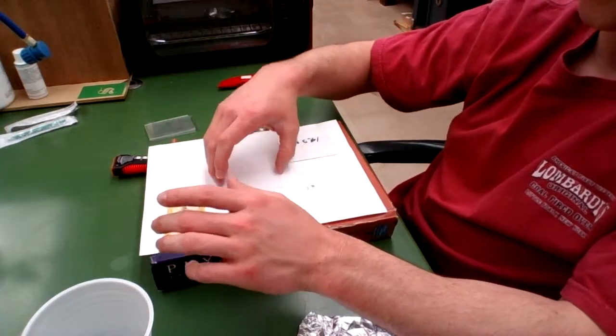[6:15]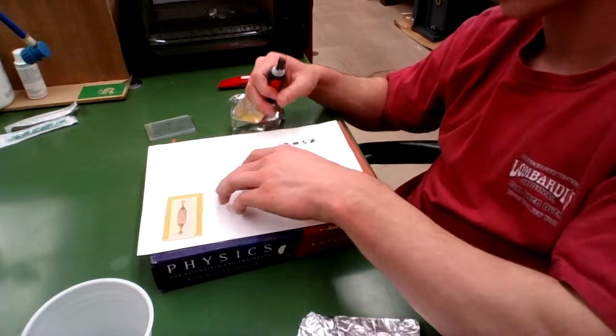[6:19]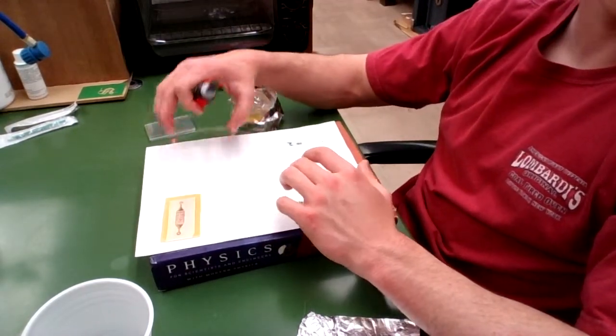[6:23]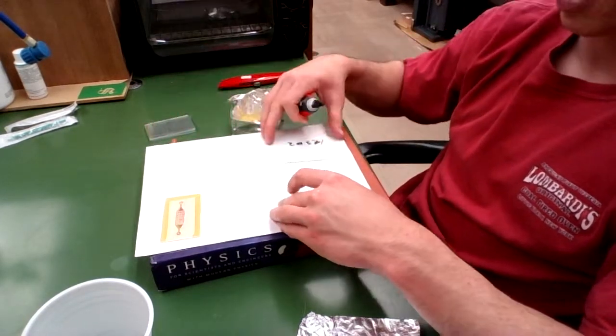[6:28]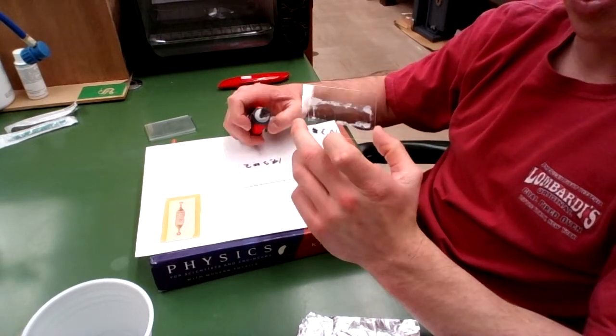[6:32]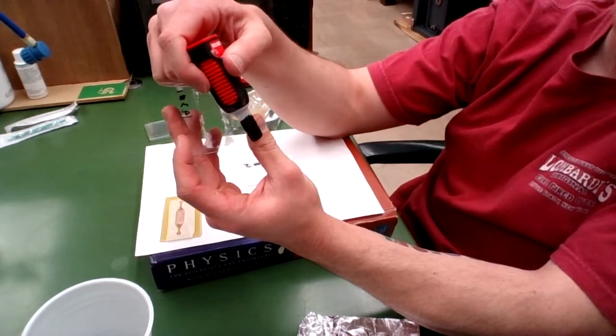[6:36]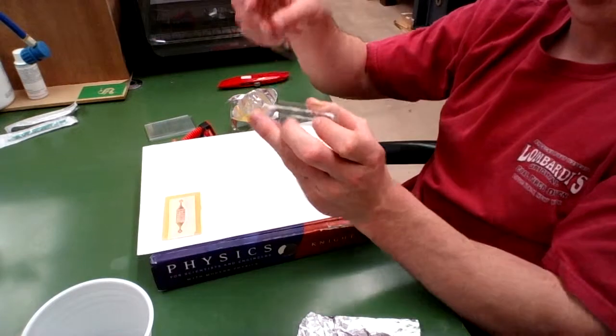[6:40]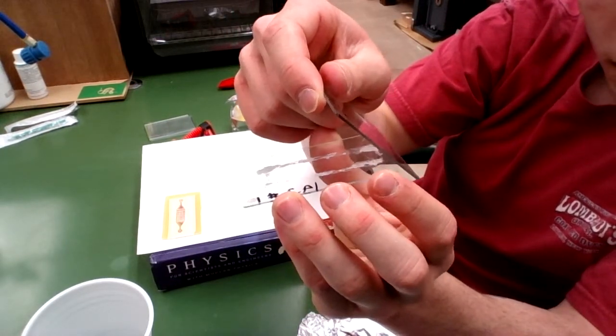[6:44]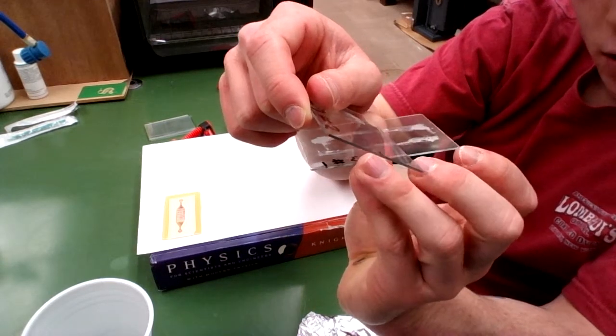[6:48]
All right, so now I have inlets and outlets punched, and so I'm going to set this down for a minute and prepare my slide for adhesion using the super glue. So the method I'm going to do this is, I have this slide that I will use to actually adhere the device to, and then I have two more slides. On one of these slides, I'm going to impart a line of super glue at the bottom, all the way across, and then using the other slide, I'm going to take that line of super glue and spread it a very thin layer across the surface of the entire slide.
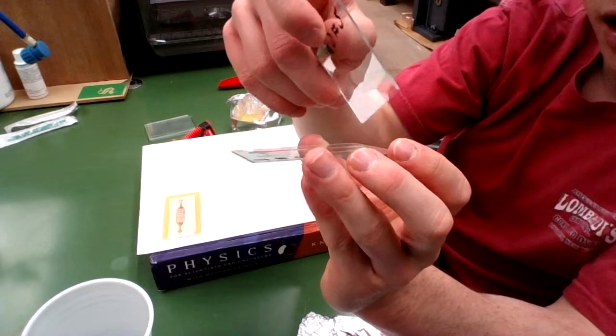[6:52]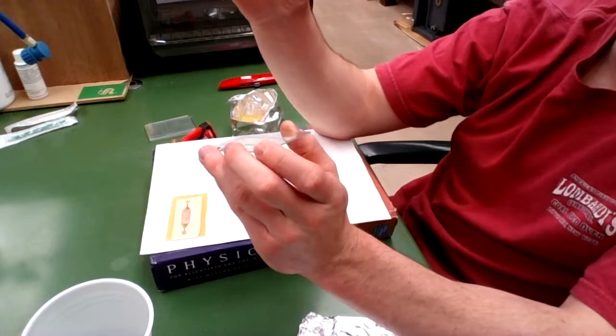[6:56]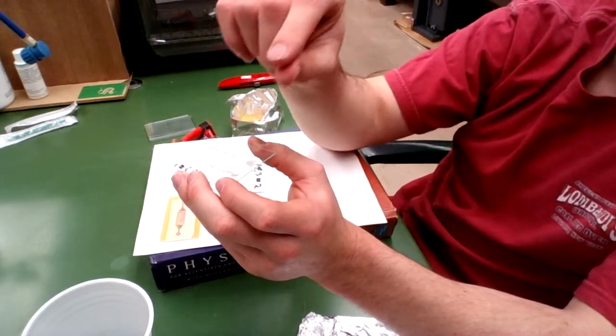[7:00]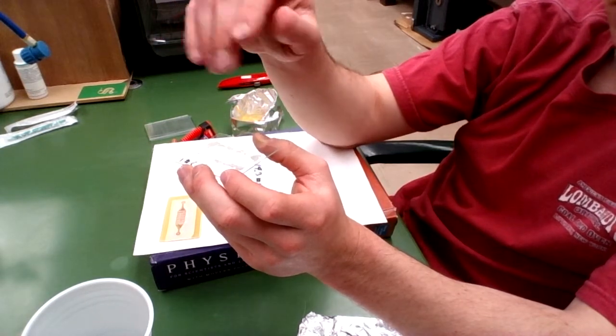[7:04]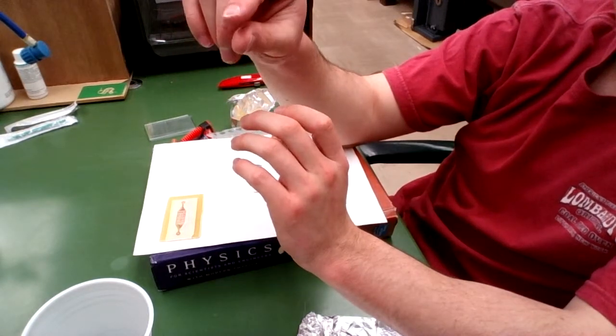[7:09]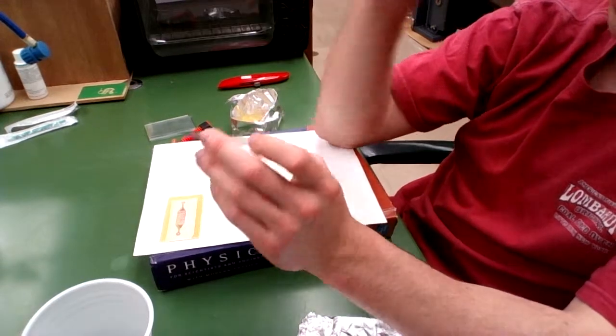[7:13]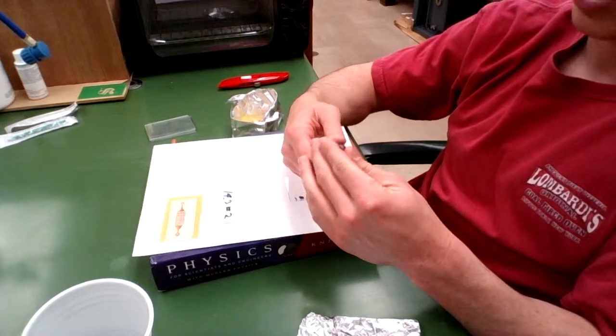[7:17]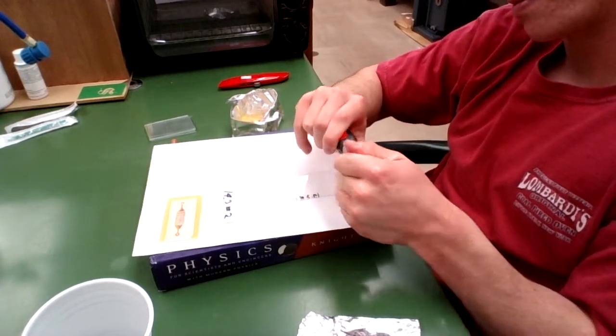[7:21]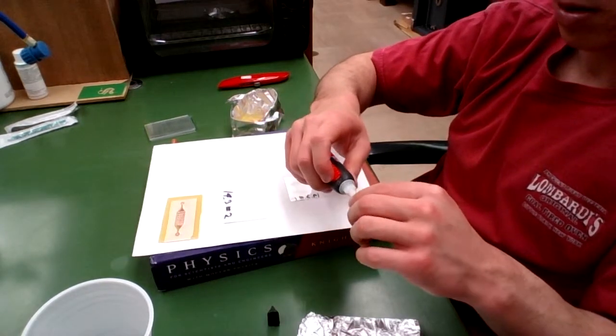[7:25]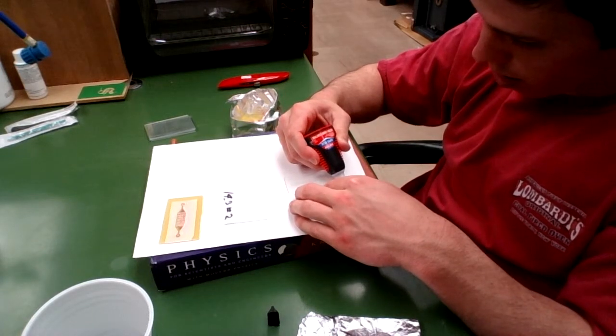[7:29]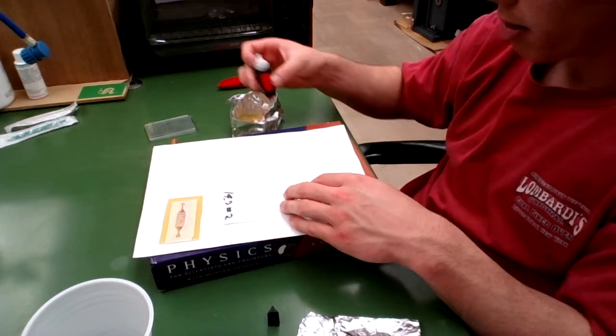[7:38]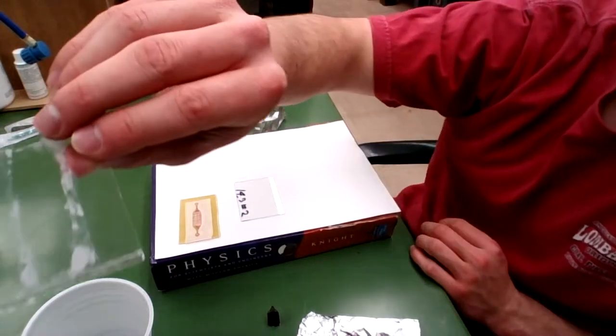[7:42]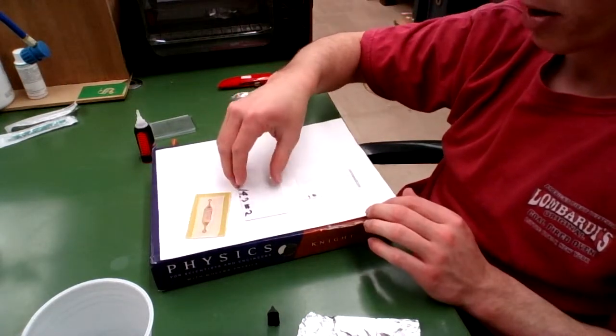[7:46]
This very thin layer hopefully will be thin enough that I can lay down my device bottom down onto the super glue, and the super glue will only attach to the parts of the device that are not indented. So this is only about a 40 micrometer indentation, so this layer needs to be extremely thin. And the faster you do this, the better, because the super glue will dry rather quickly. So there you go. There's my line of super glue at the bottom there. And I'm going to spread it across using this other slide here.
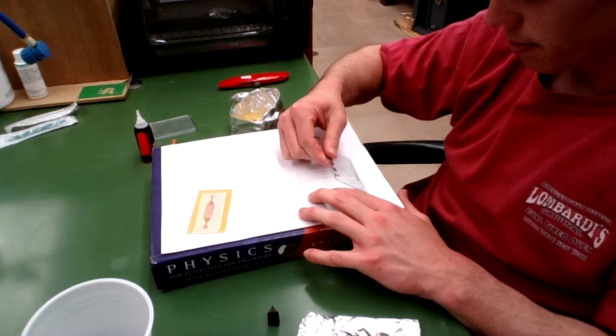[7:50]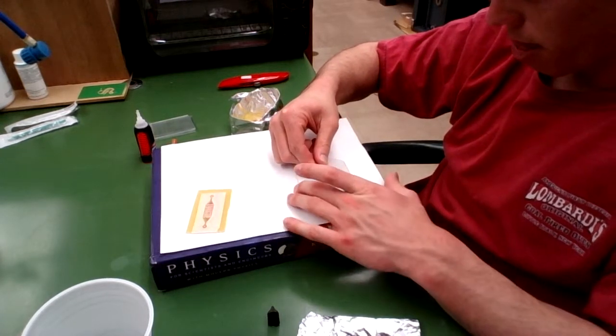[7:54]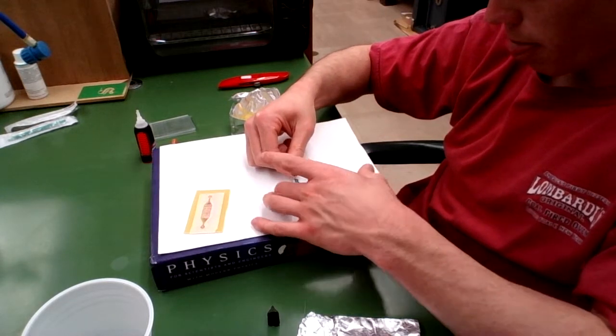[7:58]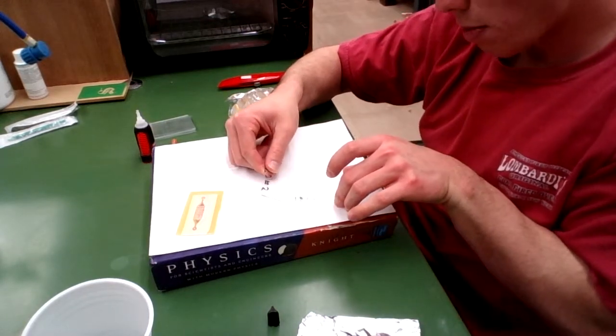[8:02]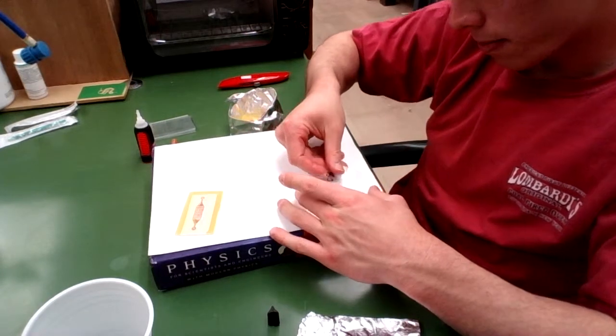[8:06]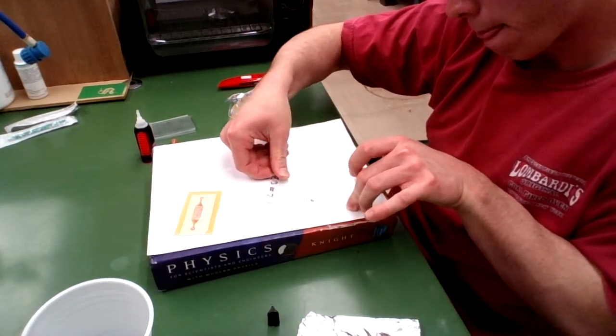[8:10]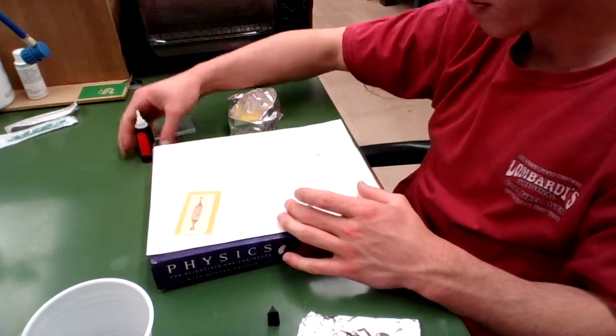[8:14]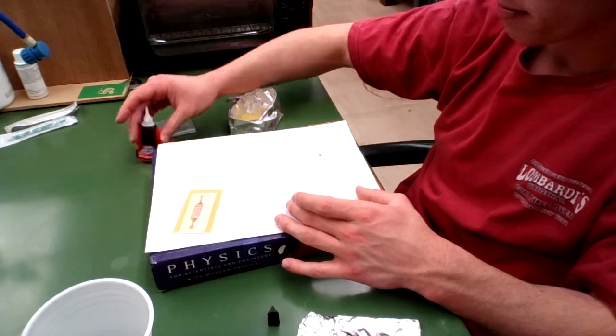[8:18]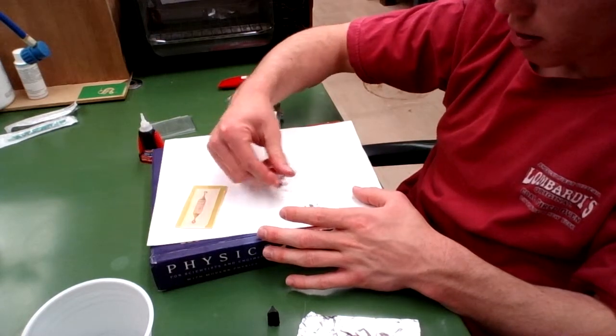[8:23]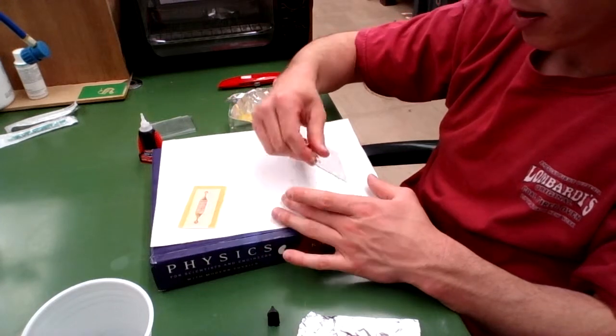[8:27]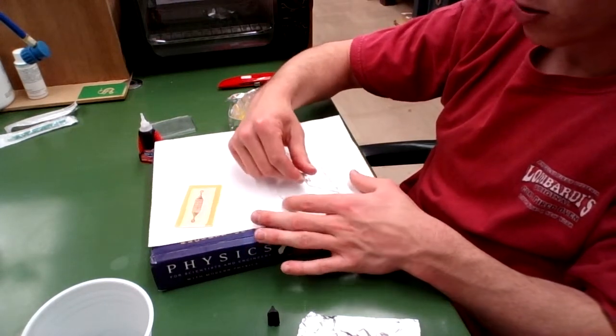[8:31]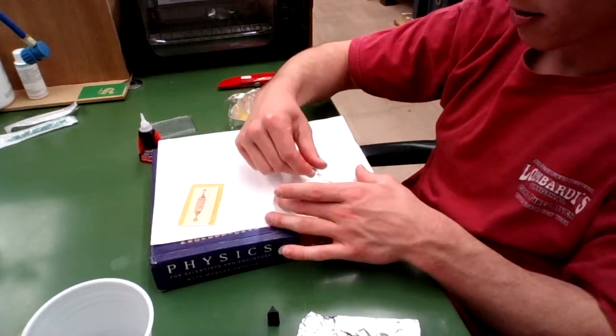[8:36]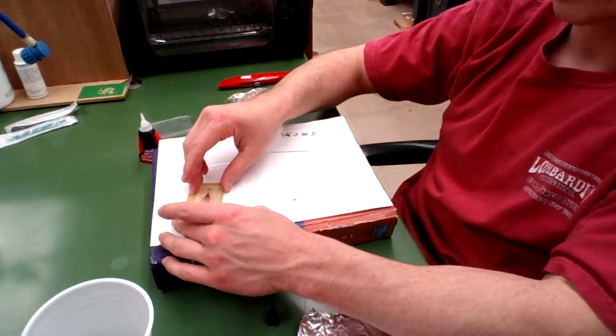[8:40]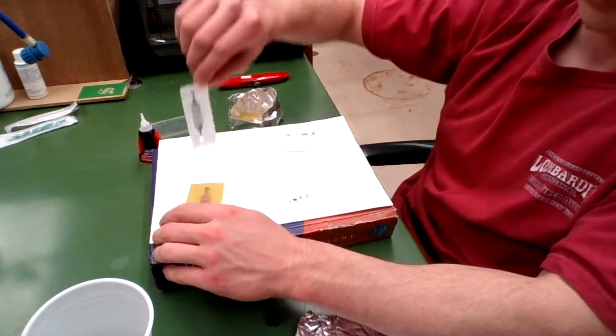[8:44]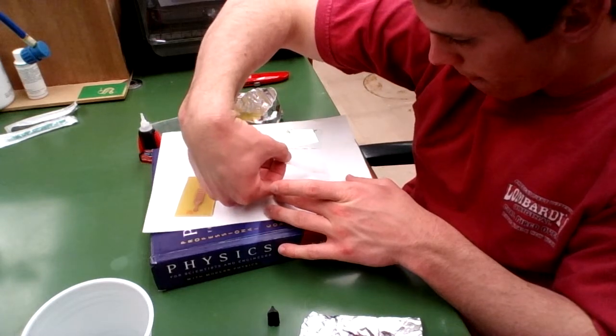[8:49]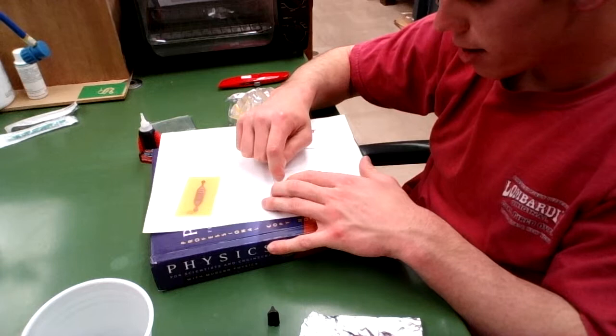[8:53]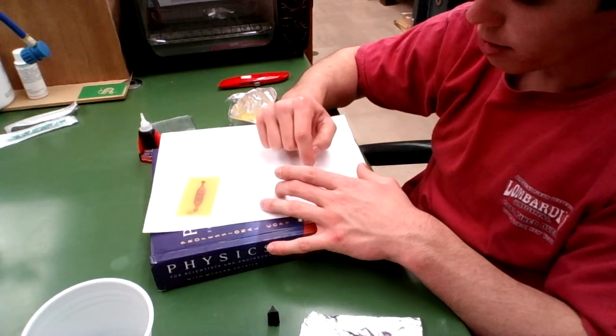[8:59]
Then add a little bit more if your entire slide isn't covered, because we want the entire device to have super glue imparted onto it, except for the part that is indented. So now I'm going to lay down my device face down onto the slide, and then push down on the areas that are not indented, that are not my channels. Push down rather gently, and then very gently on the traps.
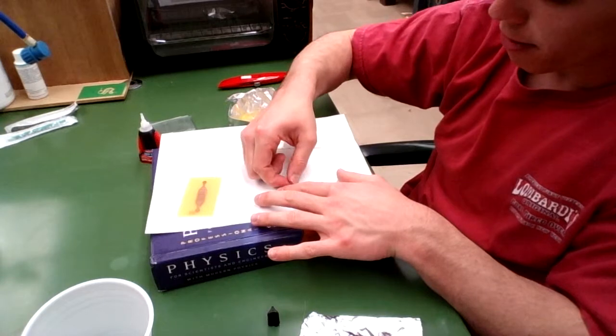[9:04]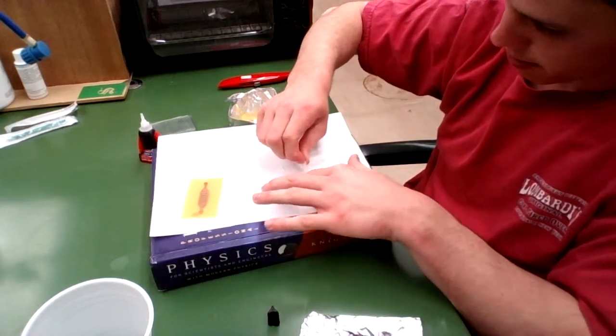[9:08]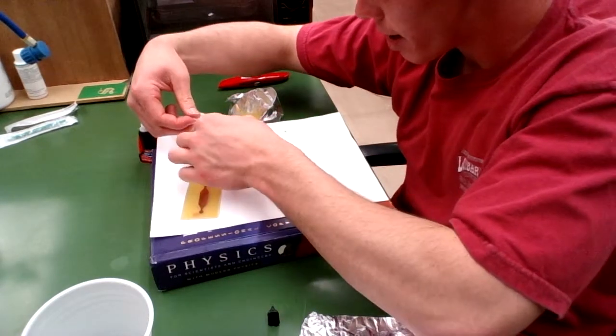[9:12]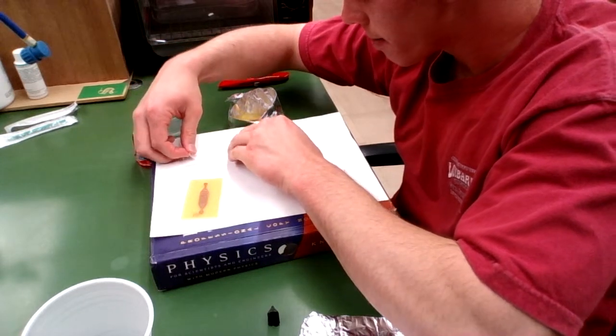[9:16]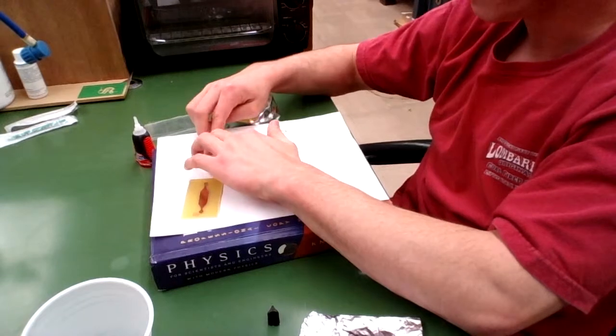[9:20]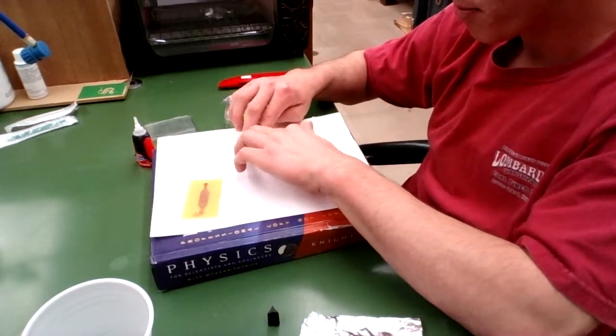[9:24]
Peel this guy off. And now put him right here onto my fresh microscope slide, and push down firmly. Push down firmly on the walls of your device.
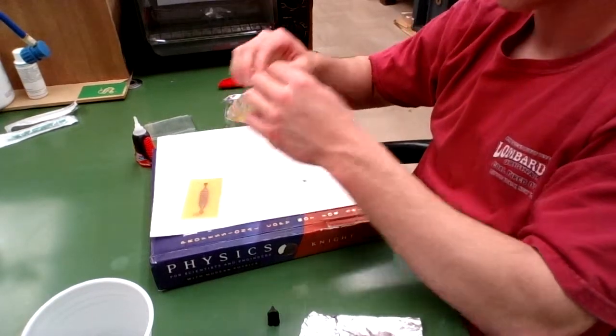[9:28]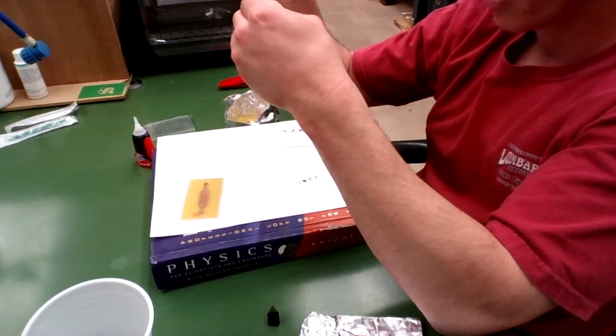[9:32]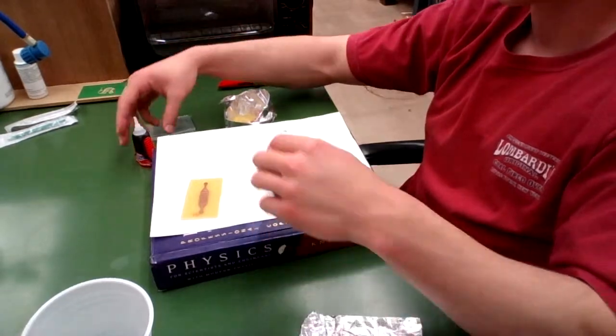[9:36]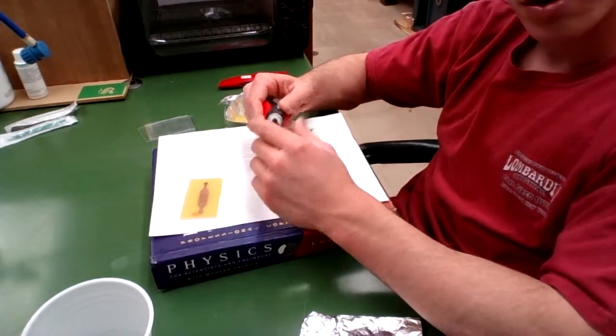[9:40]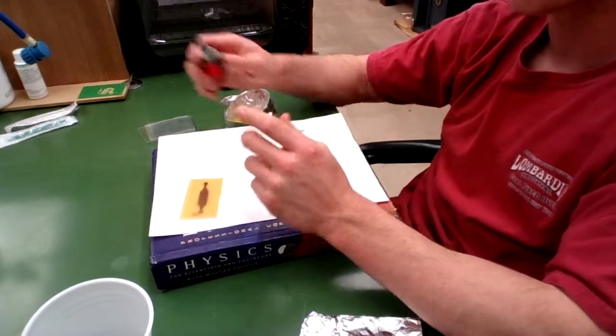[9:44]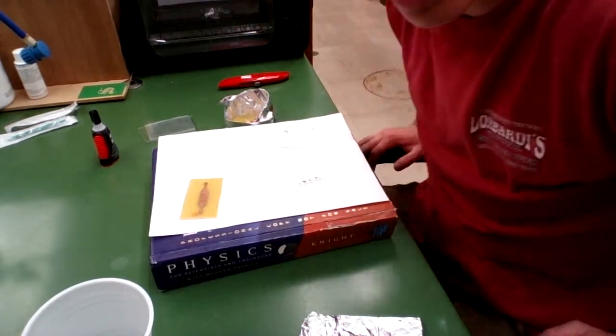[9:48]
At this point, this process is not very efficient. It's desirable because it's extremely cheap. I will post another video in which I use a plasma wand, which is highly efficient, but the plasma wand costs about $200. But it's a really cool little science experiment in which you
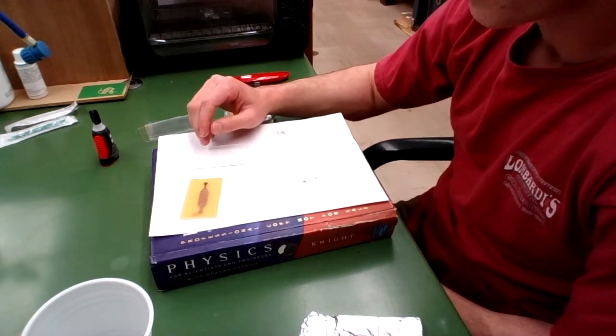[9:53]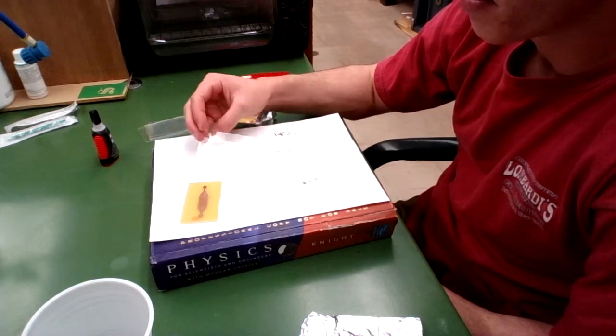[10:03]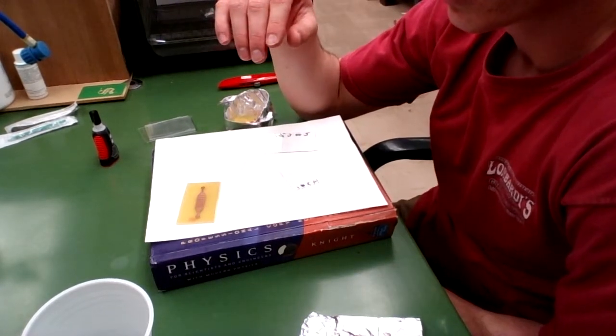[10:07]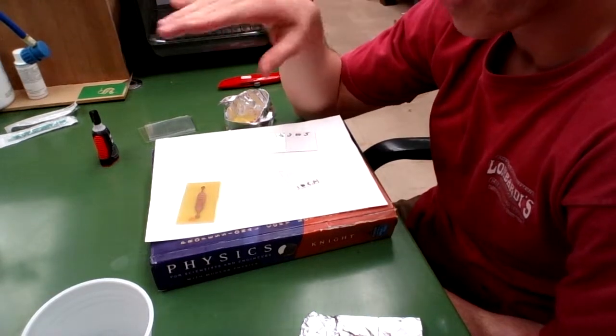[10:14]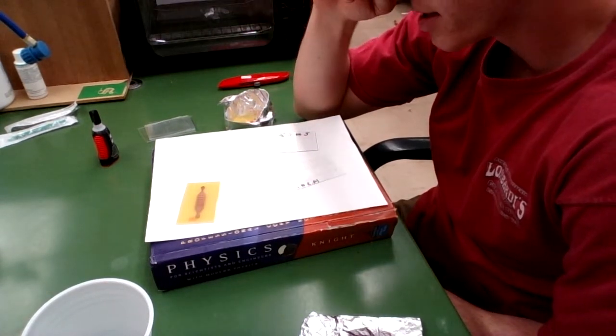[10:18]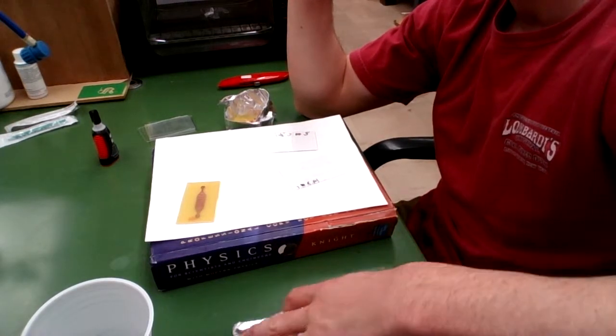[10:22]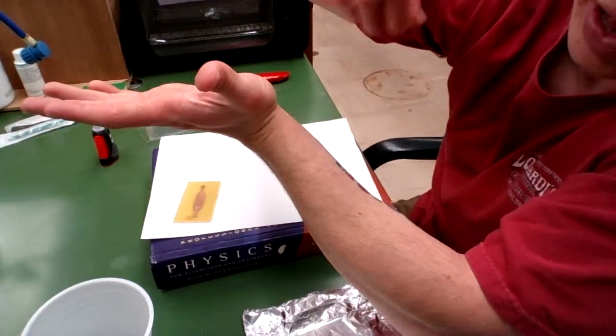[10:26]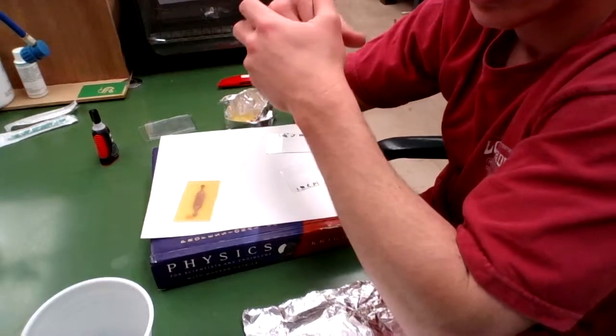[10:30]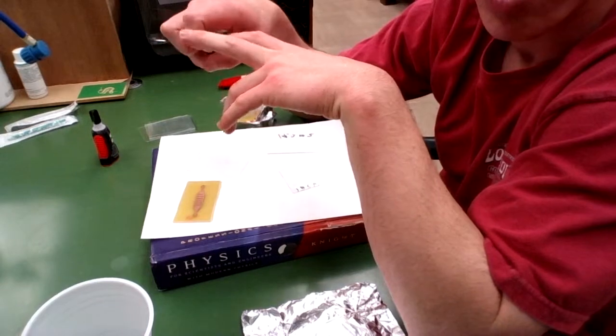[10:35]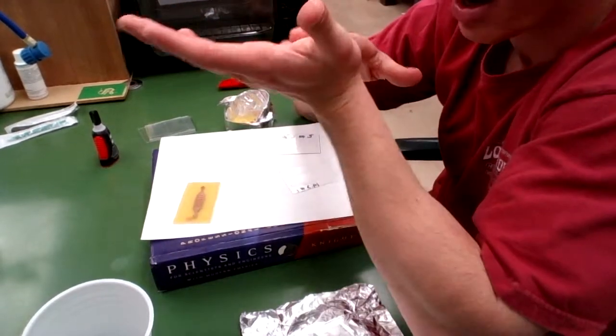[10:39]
run essentially electric current over the surface of your device, and it'll knock off hydroxyl groups off the surface of the polydimethylsiloxane, which then allows for bonding to another glass surface. And so once you have run your plasma wand over the device and knocked off all these hydroxyl groups, your PDMS device is essentially activated for bonding for about 20 or 30 seconds. Then you put on a microscope slide, push down, and it adheres perfectly.
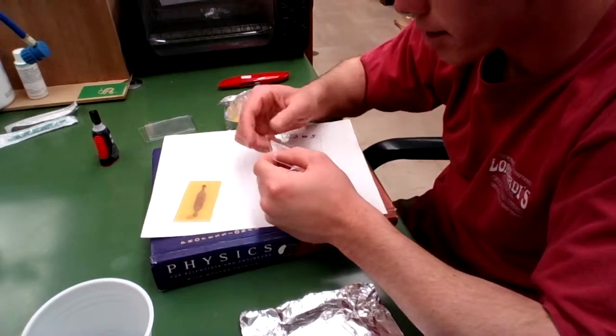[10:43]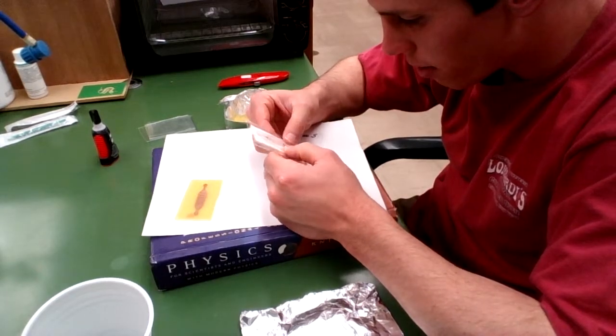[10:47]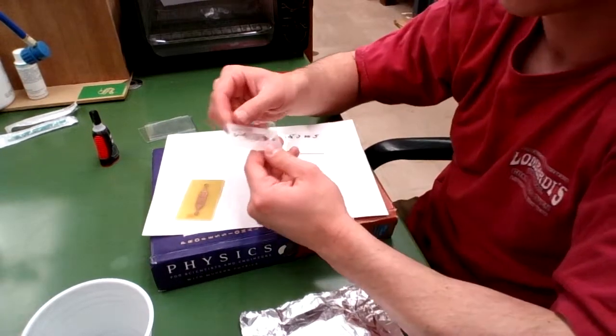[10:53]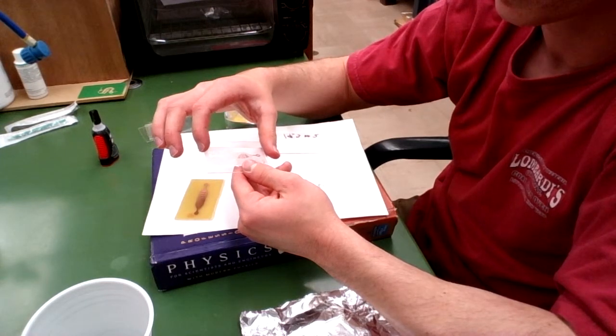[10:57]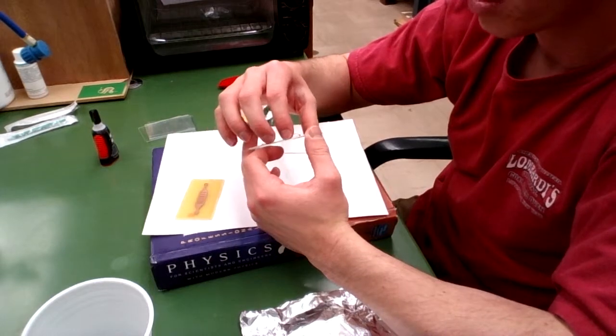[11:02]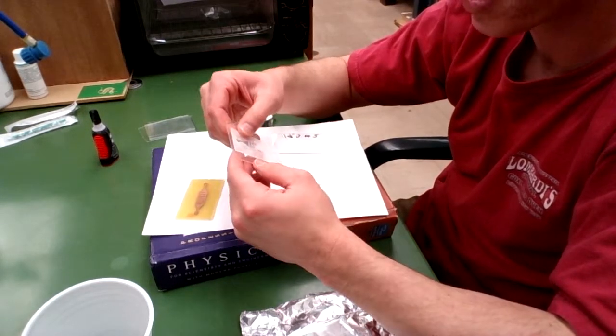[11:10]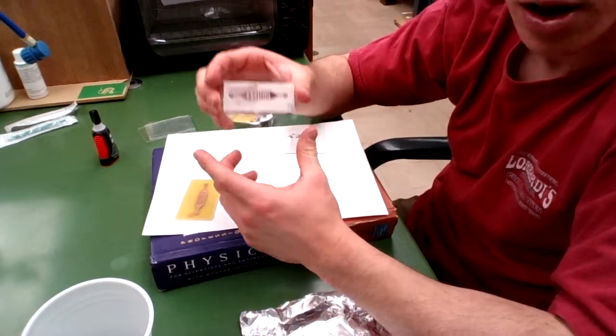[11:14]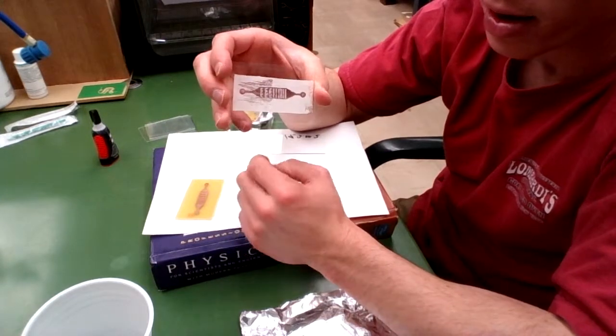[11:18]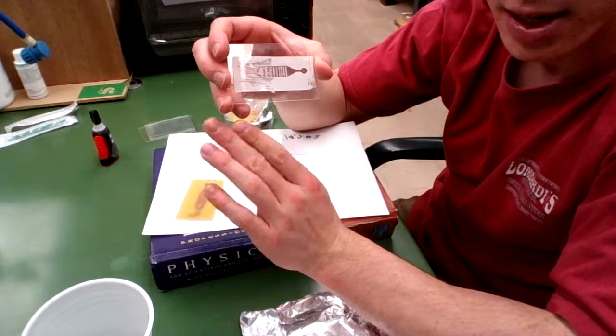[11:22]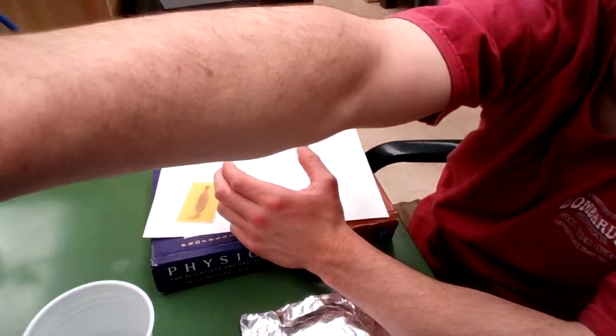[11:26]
But the super glue process costs absolutely nothing. And so after you let it sit for about 30 seconds, you can test how well it has adhered by just trying to pull up the sides. This guy seems like he's done pretty well for himself. So now the real test is to try to flow a certain substance through this device without any sort of leaks and without the traps becoming detached from the slide surface.
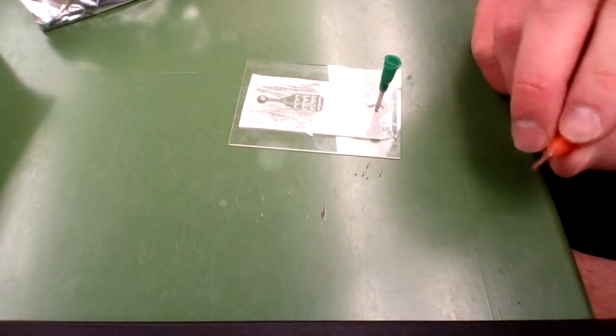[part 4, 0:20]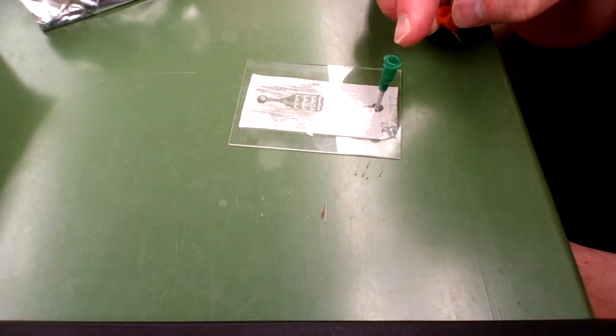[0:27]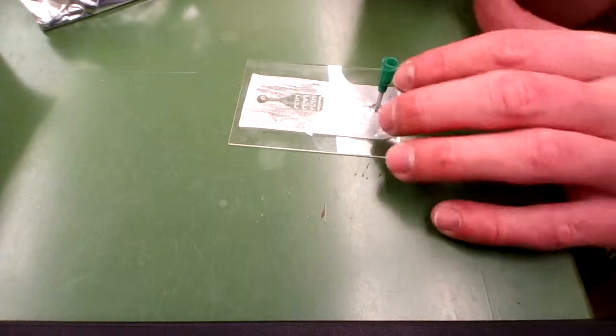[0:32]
All right, so now for the moment of truth, I'm gonna test my super glue adhere device for any leaks. So what I've done is punched a one size larger, which is a 14 gauge luer. This is a 15 gauge luer here. This is what I use to punch the holes. And so the green guy is one size larger, and he provides a very nice fit into the outlet hole there.
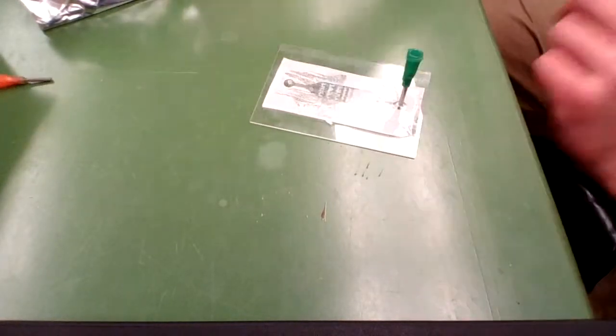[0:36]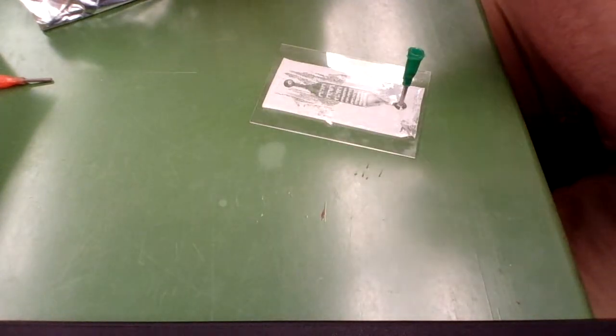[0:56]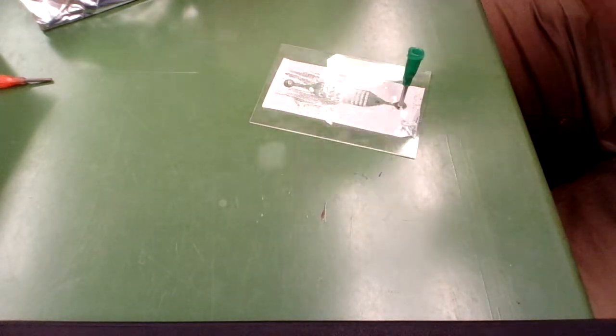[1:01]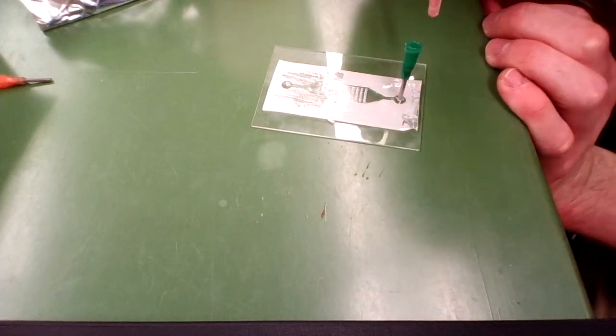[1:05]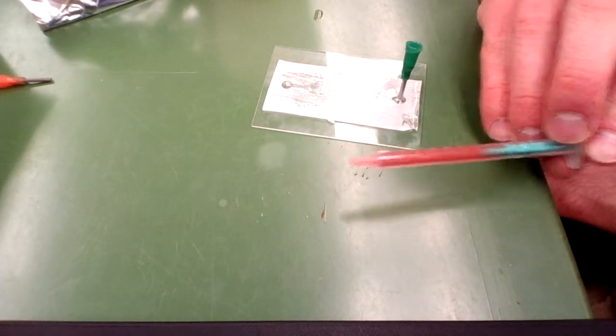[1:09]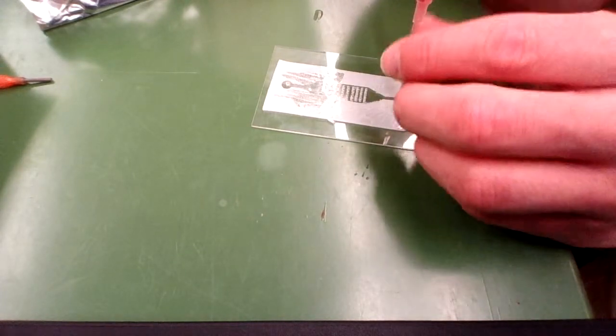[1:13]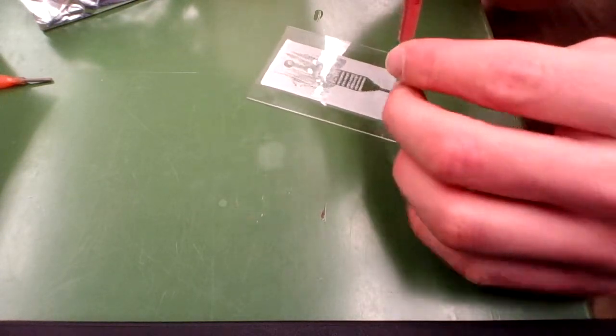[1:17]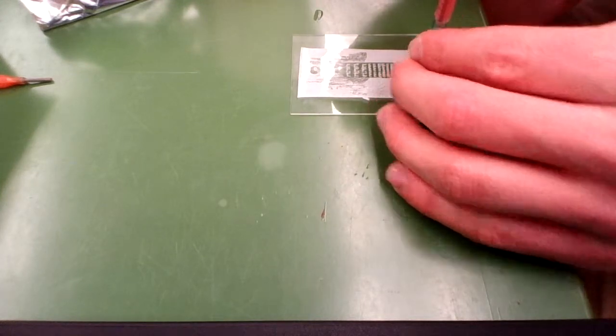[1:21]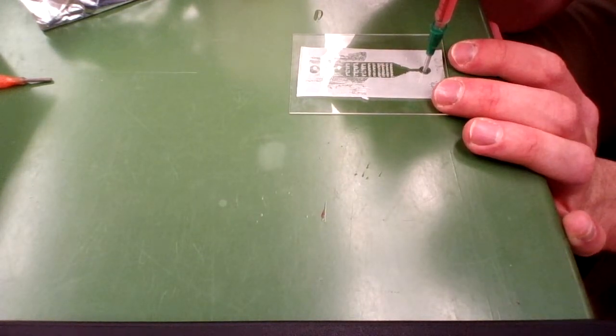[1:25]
And so I'm going to take my handy little syringe here. I have some colored water. There we go. All right. Suck a little bit of this murky red water up into here. This syringe is going to fit perfectly into the end of this device here. So push it in there relatively firmly. And then I'm going to push down pretty slowly in order to not really do anything bad.
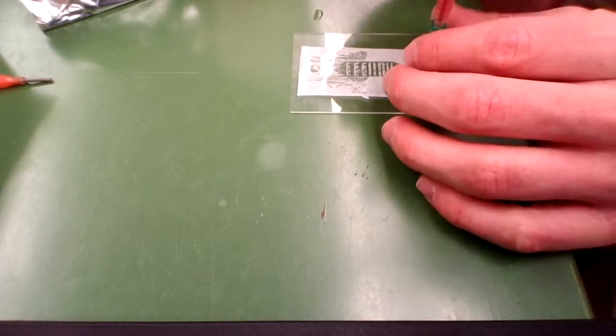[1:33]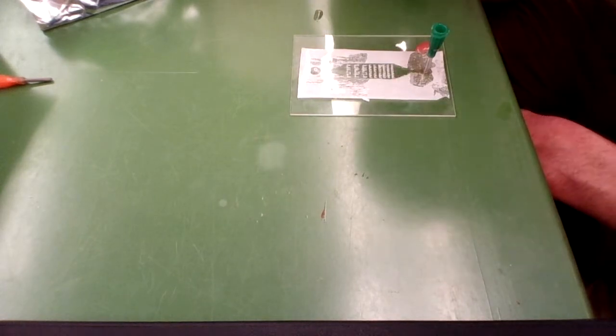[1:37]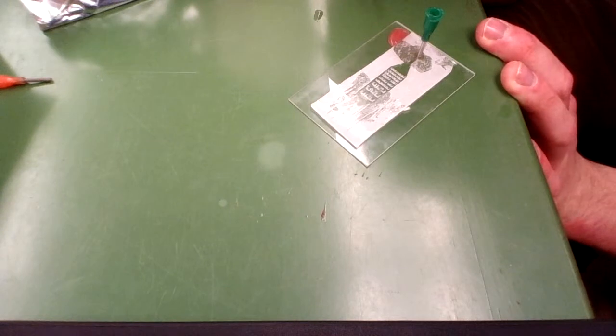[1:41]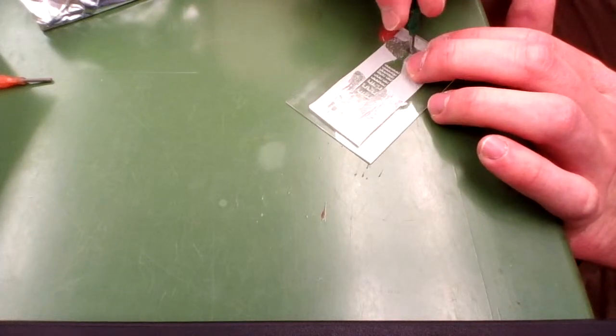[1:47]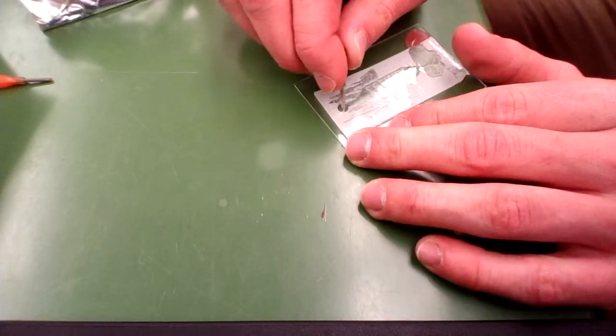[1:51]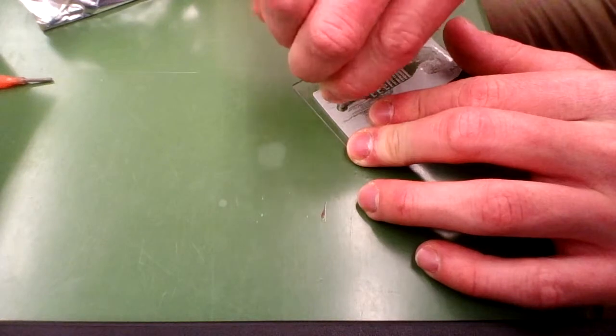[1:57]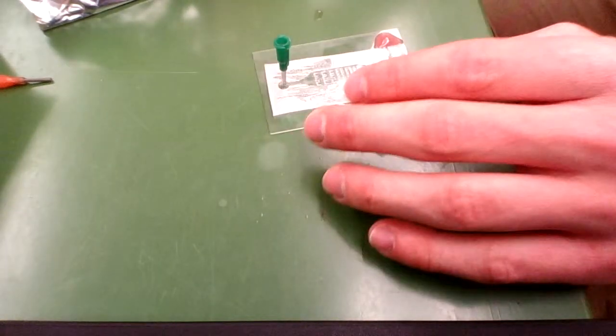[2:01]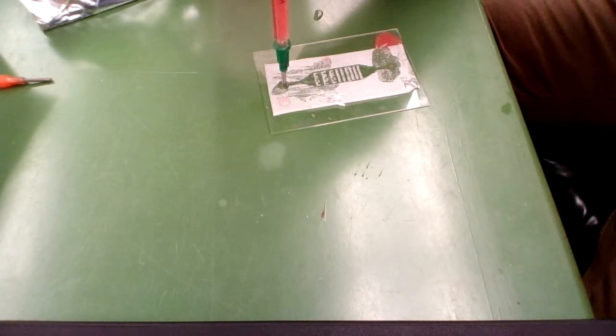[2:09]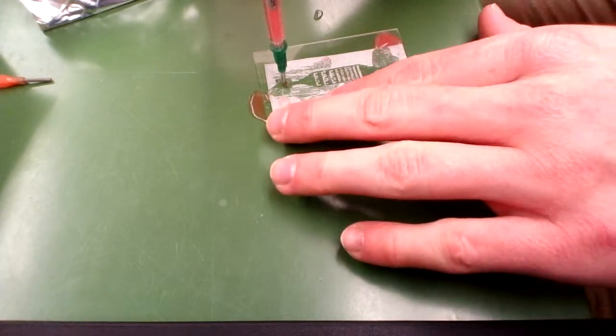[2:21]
And so as you see, this guy doesn't work. I've got a big old leak over here. So my super glue adhesion has not been perfected yet. However, let's come over here to the outlet and see if the outlet works a little bit better. And so a lot of it is heading through the device, but as you can see, there's a large crack, a large leak in the back of the device as well.
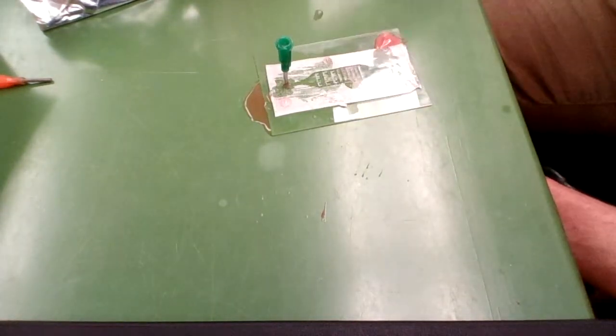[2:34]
So this super glue method has yet to be perfected, but I really want it to be able to work because it'll cut the cost of this entire process in half. So if any of you nerds out there can find a way to make this work, I will be indebted to you forever. And myself and the Vanderbilt Institute for Integrative Biosystems Research and Education will be very thankful. But like I said, I will soon post a video using the plasma wand technique, which is pretty much completely perfected at this point and provides a very solid adhesion of your device to the microscope slide.
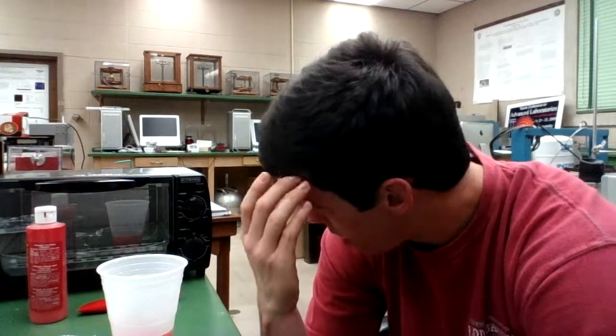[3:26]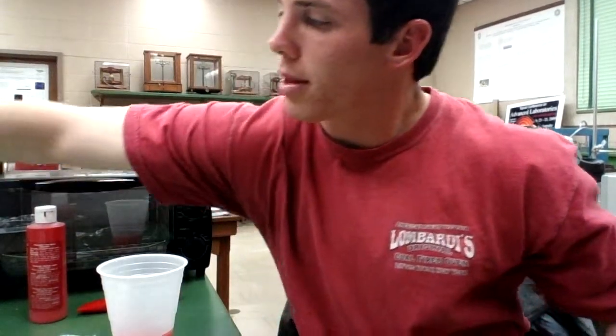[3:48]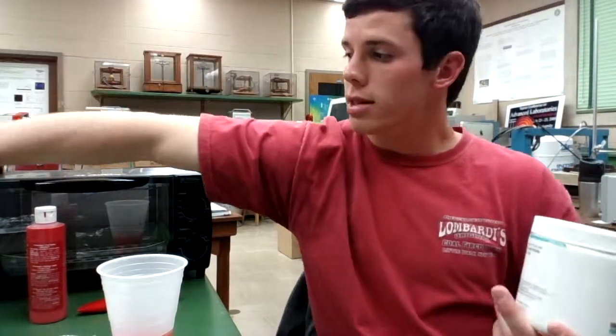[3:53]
But if you're going to go out and buy a plasma wand, that puts the cost of this entire process at slightly over $400. However, that $400 is really just an upfront cost, because after you've made all those purchases, you're only paying for any more printed circuit boards that you're buying, which only costs about $5 or $6, and then you're gonna have to pay for a new PDMS kit, which is relatively expensive, but you shouldn't need to buy more PDMS more than once every 30 or 40 devices you make.
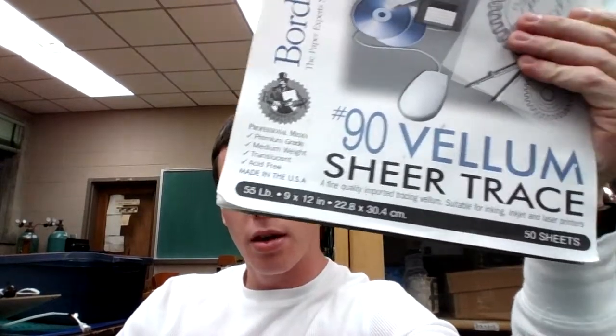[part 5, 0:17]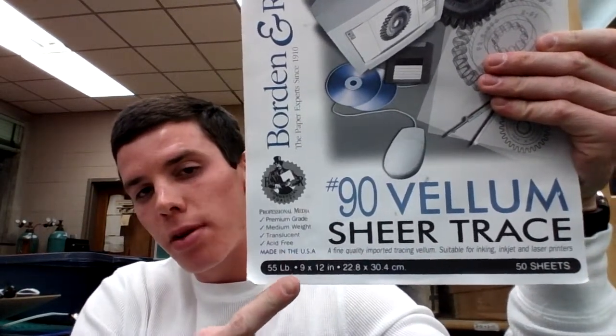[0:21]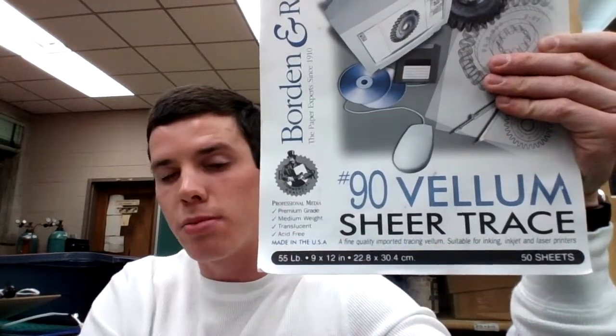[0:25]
So when you're satisfied with your device design, what you need to do is print it out on vellum tracing paper. Now, vellum tracing paper is some of the thickest commercially available tracing paper. I was able to find some of it at my local Michael's Arts and Crafts store, but sometimes it's listed as 55-pound tracing paper, number 90 tracing paper, number 90 vellum tracing paper, or just vellum tracing paper.
Regardless, whatever you find, make sure it's the highest weight per area tracing paper that you can get your hands on, because if you use tracing paper that is too thin and attempt to print onto it, it will often melt during the printing process, causing your printer to jam, which is a real bummer.
Second, you need to use the highest resolution printer that you can get your hands on. This is extremely important because the printing onto tracing paper process is actually the greatest hindrance to resolution in your final device. The following development, etching, and casting processes only hinder the resolution a fraction of the amount that the printing process does due to the pixelation that occurs when the ink hits the tracing paper and blots outward, essentially.
I used a 1200 DPI laser jet printer, and this allowed me to achieve resolution of about 40 micrometers in my final devices. If you can get your hands on a higher resolution printer, you might be able to get below 30 or 20 micrometers in your final device.
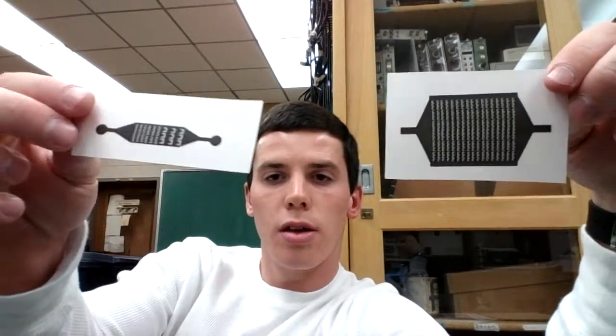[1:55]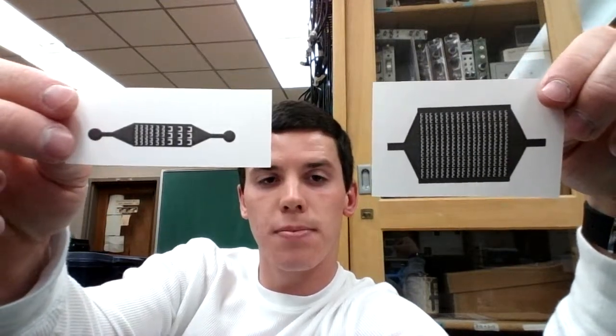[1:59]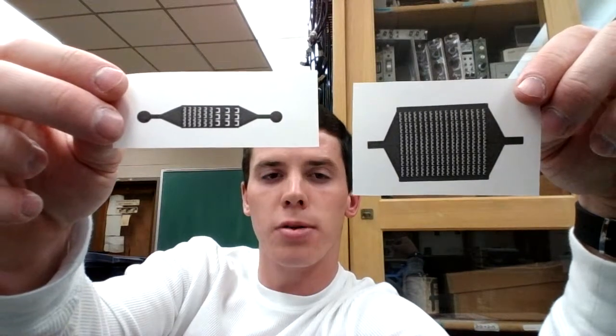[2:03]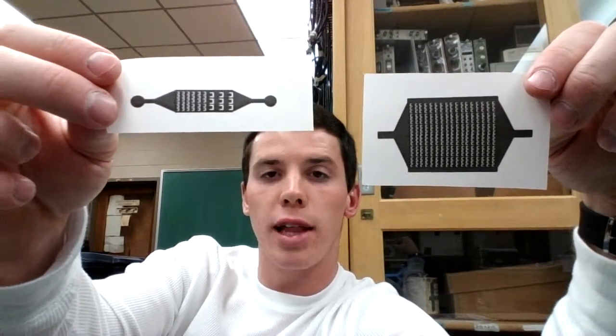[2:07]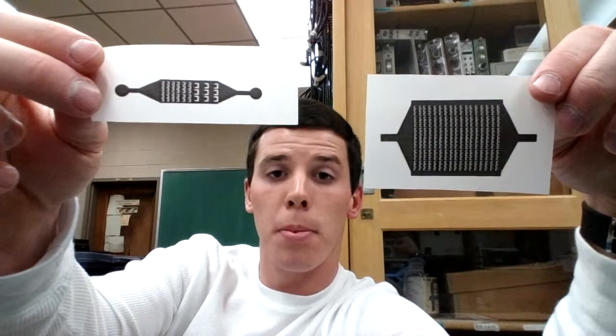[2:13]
So I've printed out two designs onto the vellum tracing paper. These are called photomasks. We will use these to expose printed circuit boards to UV light, which will then impart this design onto the circuit board.